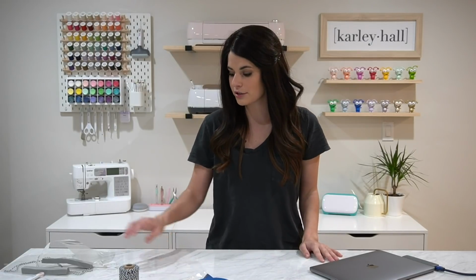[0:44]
Hey everyone, it's Carly Hall, and today's video is a super practical video on how you can help while still staying at home with everything going on in the world right now.
Last night I put out a call on my Instagram to see if people still needed additional personal protective equipment, PPE, and I received an overwhelming amount of response that yes, people still need handmade PPE. Of course, I'm not a doctor, and so I can't validate the effectiveness of what I'm about to show you, but this is my way of trying to help with everything that's going on.
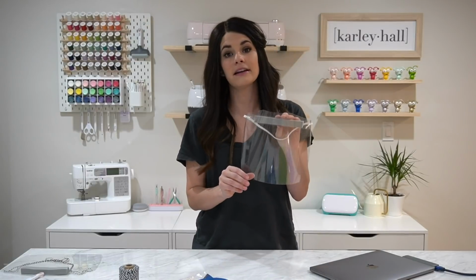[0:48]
And as always, PPE that's handmade is a last resort, but it's better than nothing. And in some cases, some people have nothing. So I wanted to show you what I came up with. I modified a whole bunch of patterns that I found online to create these protective face shields.
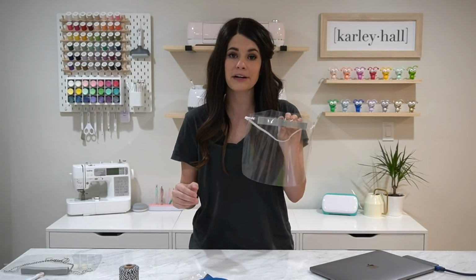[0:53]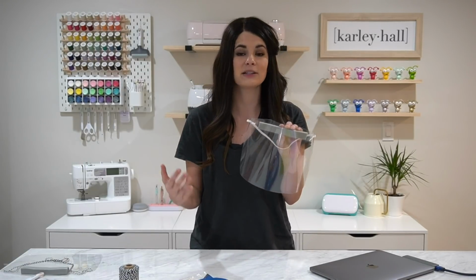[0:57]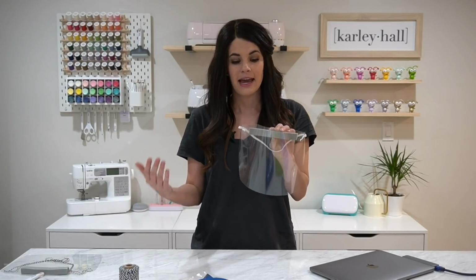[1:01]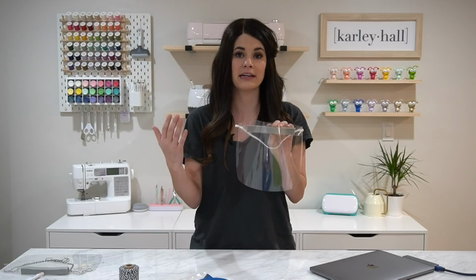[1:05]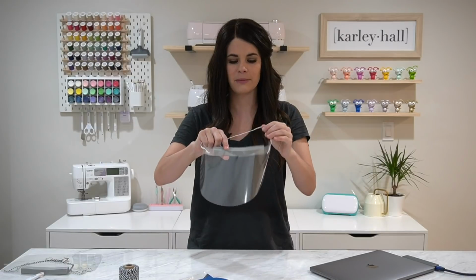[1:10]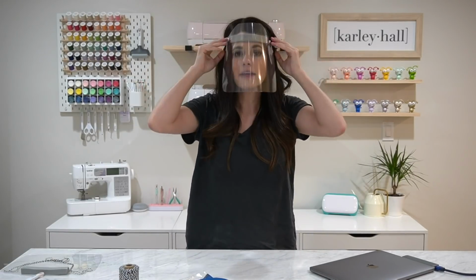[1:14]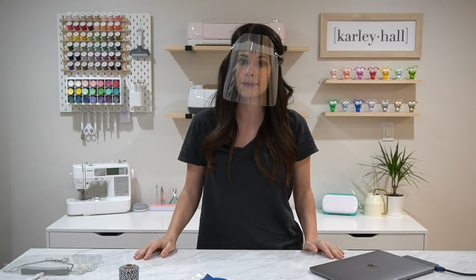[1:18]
Now these are a moisture barrier that will prevent moisture from penetrating a N95 mask or a homemade face mask, and that will increase the longevity of the mask and of course protect the people behind the mask from getting any moisture in their face. So we are going to use transparency film, and the mask fits just like this. This one uses elastic, but I will also show you one that uses a string or a ribbon.
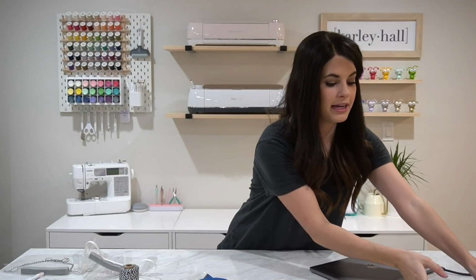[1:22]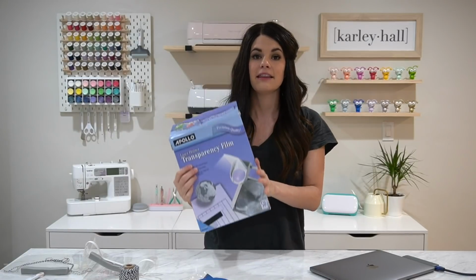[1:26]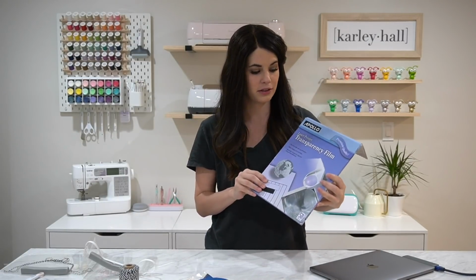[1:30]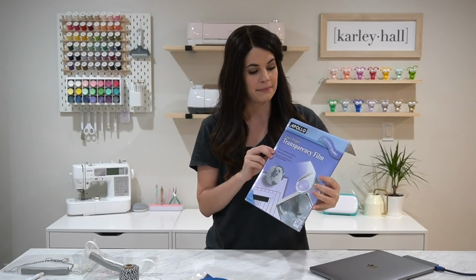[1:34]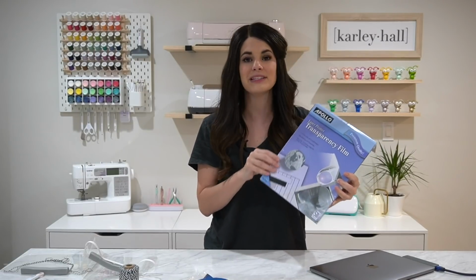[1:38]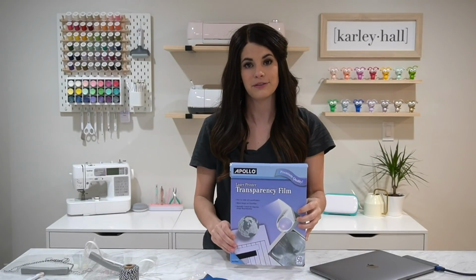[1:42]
All right, here is all you need to get started. So I am using transparency film, and this is the film that teachers use on overhead projectors, or used. I'm not sure if they still use it, but I will link to where you can find this online. It's from big office stores. Amazon has it. So again, please do not leave your homes to get your supplies. Have them shipped to you if you can, or ship them to people that are making these.
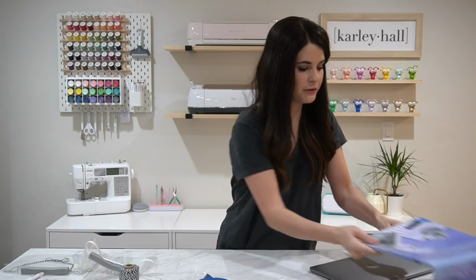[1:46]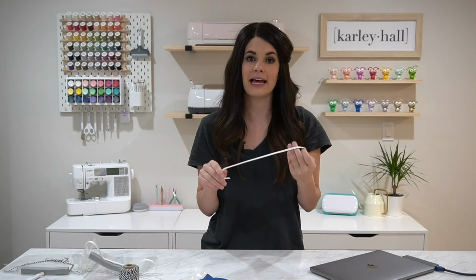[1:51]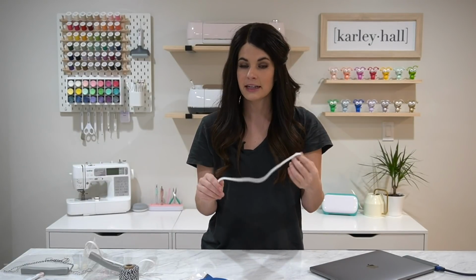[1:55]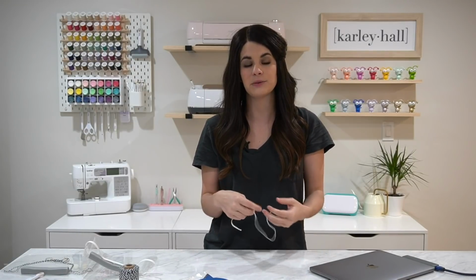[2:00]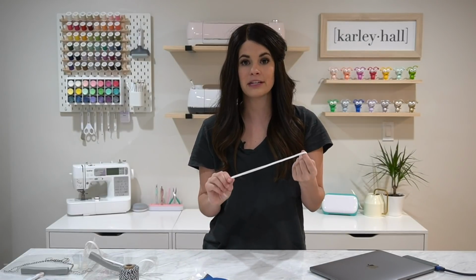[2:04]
So we will need transparency film. If you have elastic, I know a lot of us went through all of our elastic when we were making our face masks. So you either need elastic. I've seen gift wrap elastic being used, so I will link to all the places that still have elastic in stock. I'm using a 1/4 inch, 14 inch long piece of elastic, but you can also use string. So I know a lot of people are still out and working and they need any type of protection that they can get. So I wanted to include an option that you can use a piece of string or ribbon.
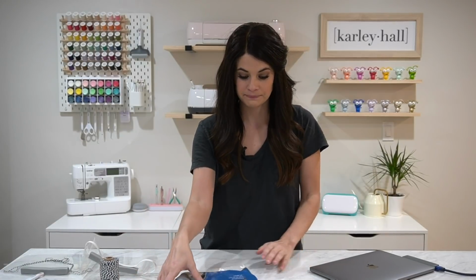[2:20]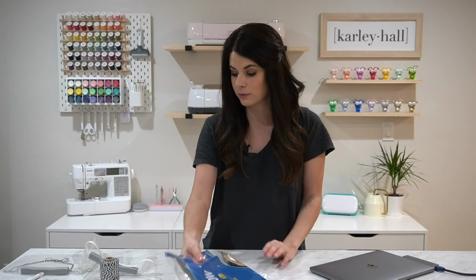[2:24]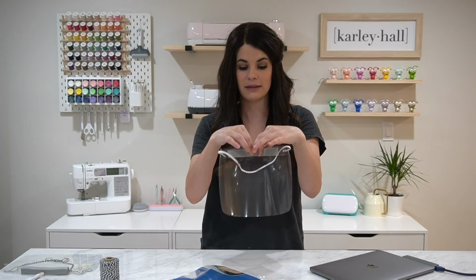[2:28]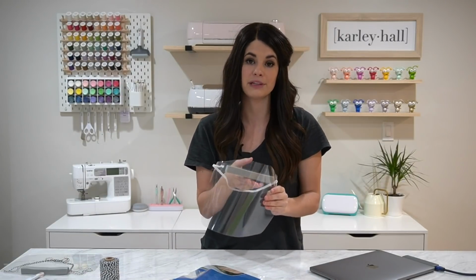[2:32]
And then optional is foam window seal. So this foam is what goes along the top of the face shield, just to make it a little bit more comfortable, but you actually do not need the foam to complete this project. We can do it without it.
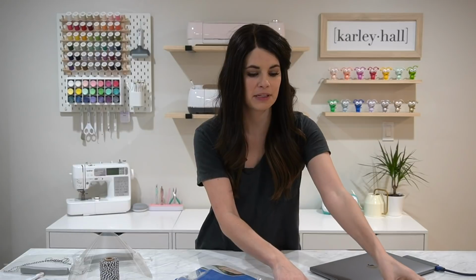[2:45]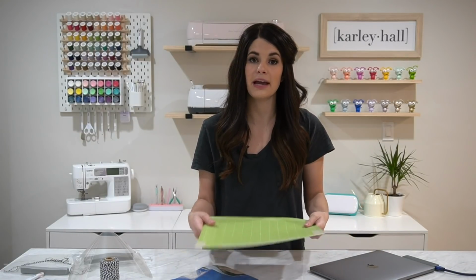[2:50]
If you have a cutting machine, that's great. We can cut the template out. If not, you can print the template out and just cut around it like you would a sewing pattern. So we will be using our Cricut cutting machine. You can use your Maker or your Air 2, and then you'll just need a standard grip mat.
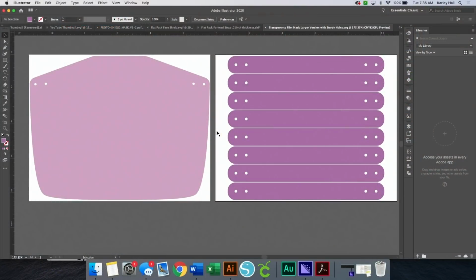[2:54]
Here is the file that I created for these face masks. So this is the shield in the front, and then these pieces are the head strap that makes it curve. So you can fit 2, 4, 6, 8 on one sheet of transparency, and then one mask on each 8.5 by 11 transparency sheet. We are going to bring this design into Cricut Design Space.
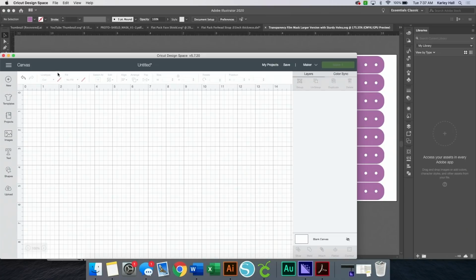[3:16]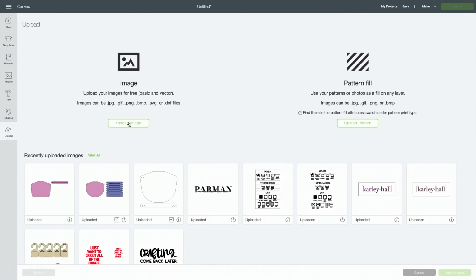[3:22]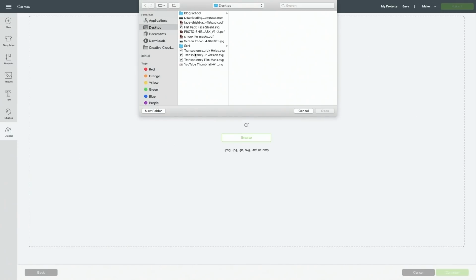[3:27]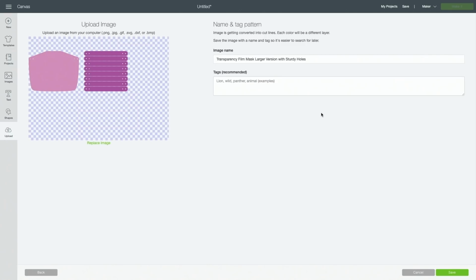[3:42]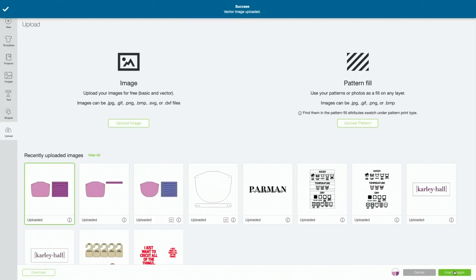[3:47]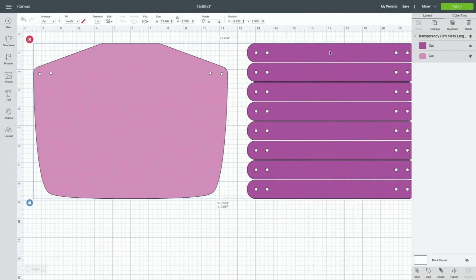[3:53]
So start by opening Design Space and then navigating to the upload option here. We're going to choose upload, browse all images, and then download the version from my blog, or if I sent it to you in email, I will make sure to put the link in the video description below so that you have it easily accessible. So I'm going to open up this version here, and then we're going to save it and continue on. We'll insert that onto our canvas, and it should come in just like this at the correct size already. So we'll click Make It.
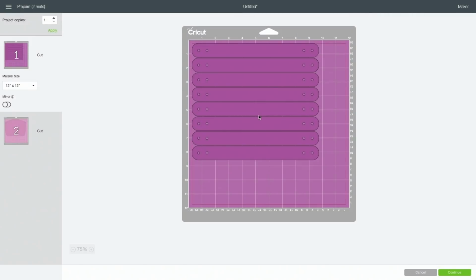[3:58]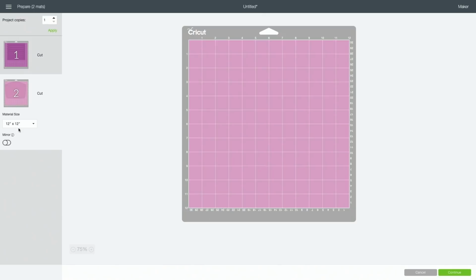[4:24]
And then this part is kind of helpful. I decided that I wanted to move these to the center of my mat to make lining up the 8.5 by 11 material a little bit easier. Since I cut it so big, 8.5 by 11 is actually not an option for my material size because it's a little bit too big for 8.5 by 11. So we're gonna hack it just a little bit, and we're gonna drop that into the center of our cutting mat by dragging it to the center.
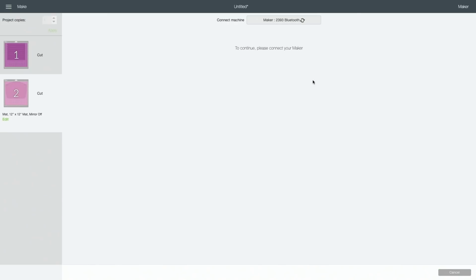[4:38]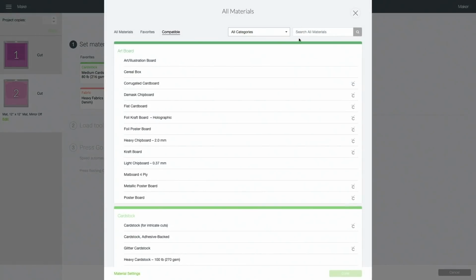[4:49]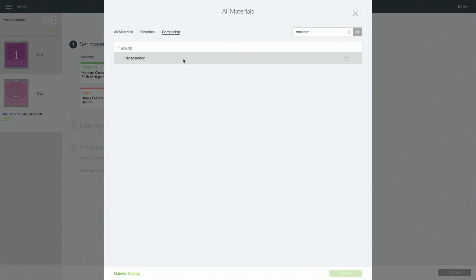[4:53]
We'll do the same thing with the larger shield. And you can see that I'm about 1/4 inch, a little bit over from that red line. So you just want to pay attention to where the red line is. Click continue and then connect to your machine. If you are using an Explorer Air 2 machine, you can turn your dial to custom and then choose browse all materials like you can on the Maker, and then just search transparency. And then choose this result here and click done.
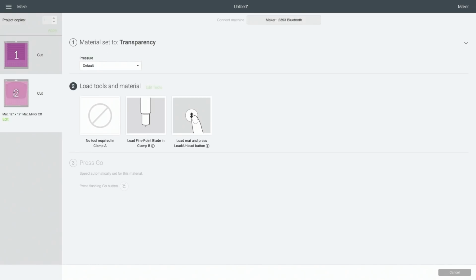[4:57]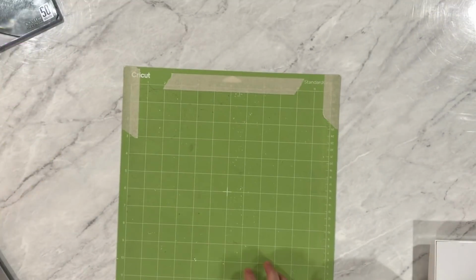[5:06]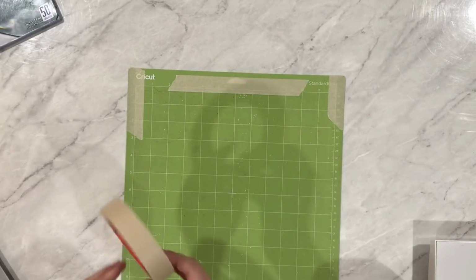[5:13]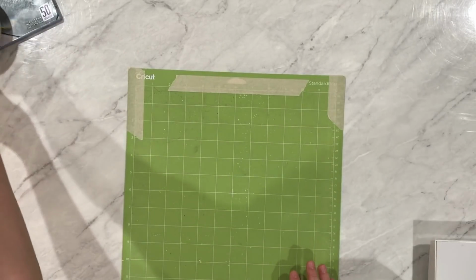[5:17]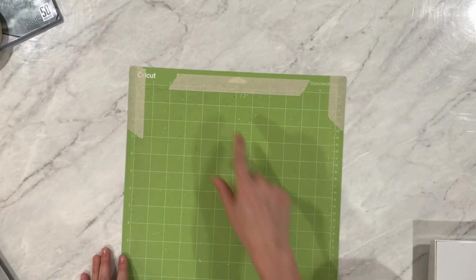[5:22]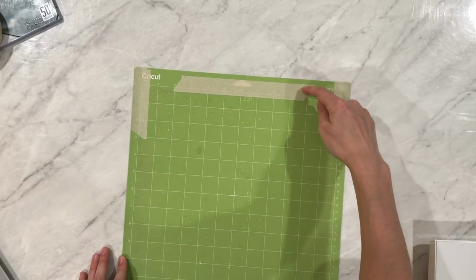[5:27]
We're going to start with the larger face shield piece, and I will show you how to load the transparency on your mat so that you cut it perfectly every single time. To load your transparency film in the center of your mat, I used a piece of masking tape along the edges. You can see it's just a standard roll of masking tape. And I taped it along the edges just so that I could see where the center was a little bit easier. And then I also measured down about 1/4 of an inch down my mat, maybe a little bit closer to the top, and I taped that off.
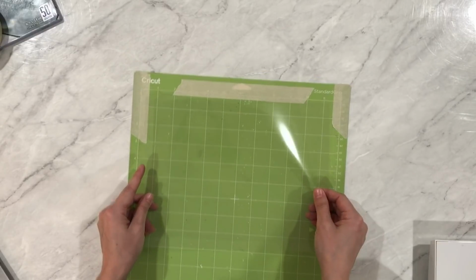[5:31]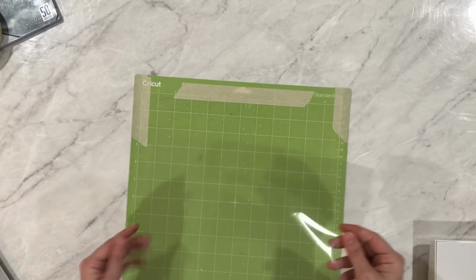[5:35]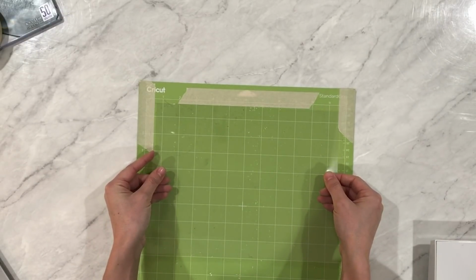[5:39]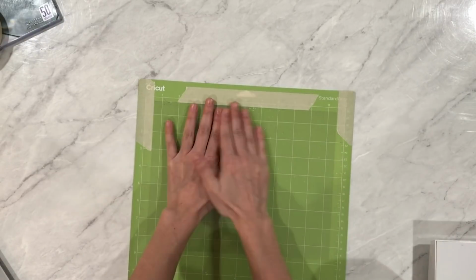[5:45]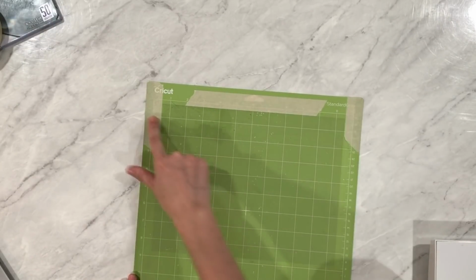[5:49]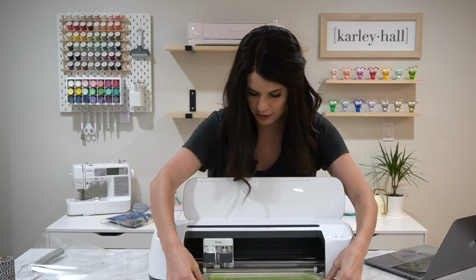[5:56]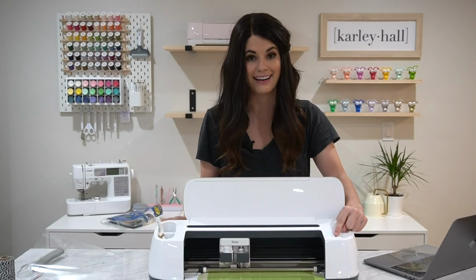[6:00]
Now you can cut the first one and then see where it ends up being. That could be helpful as well. So after you have it taped out, you're just going to want to line it up against that masking tape at the top and then do your best to center the 8.5 by 11 sheet landscape along your mat. So I have it up against almost each edge of the masking tape and then against the top edge of the tape there. We'll load this into our cutting machine and then cut it.
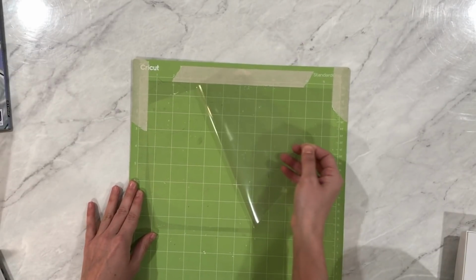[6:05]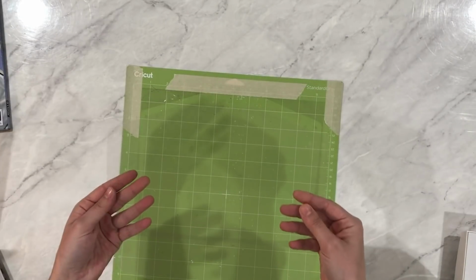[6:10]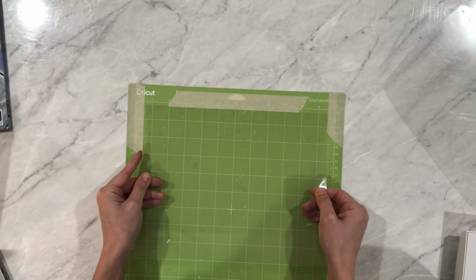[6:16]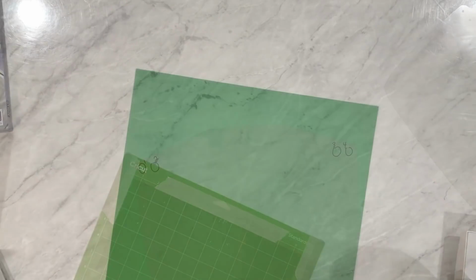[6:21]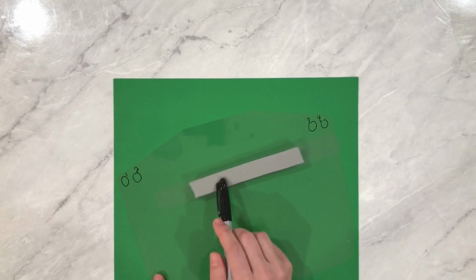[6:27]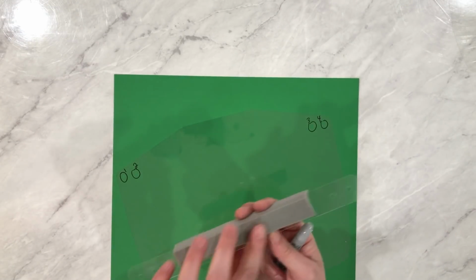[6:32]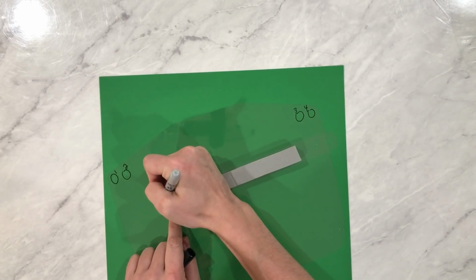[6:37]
You can see here that by centering it just like that, all of your pieces will not be cut off and you'll have your clear face shield ready to go. Next, we'll cut the strap around your head and we will line up the transparency film the same way and cut that. I added some numbers around the holes so you could see what I'm doing, and then I went ahead and I cut down a piece of foam and applied it. If you don't have the adhesive foam, you can tape this on with double-sided tape, and then the 4 holes are right here, so I will circle those so you can see them as well.
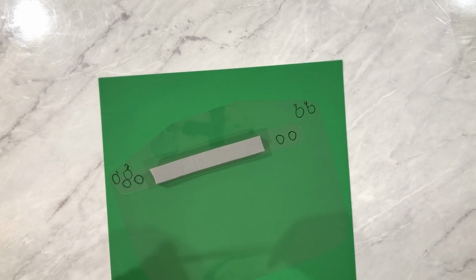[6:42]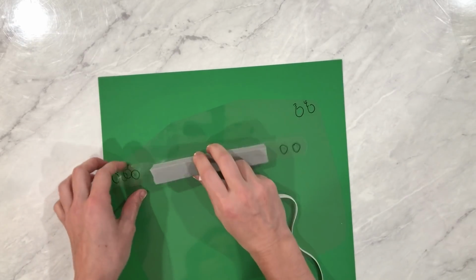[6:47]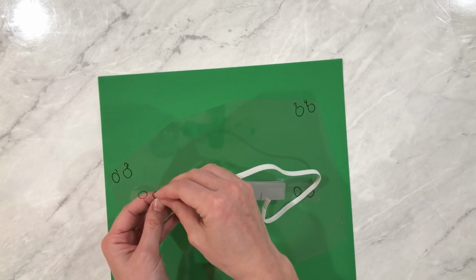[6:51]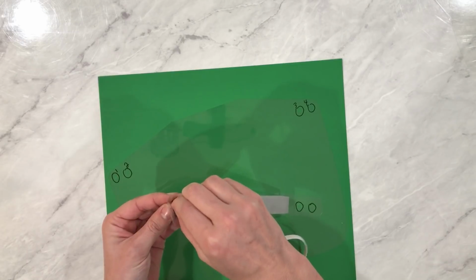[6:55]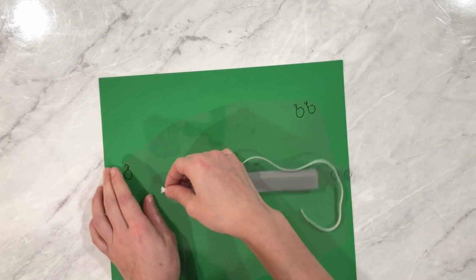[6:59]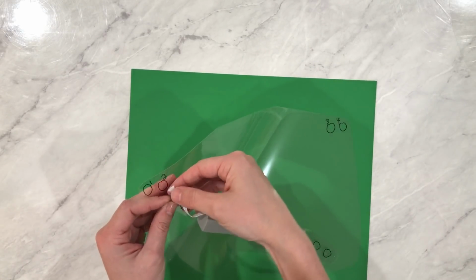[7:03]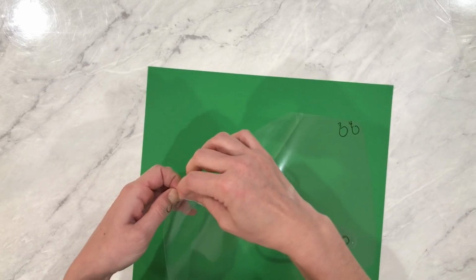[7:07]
I'm going to start with our elastic version. Again, if you don't have elastic, we will also do a string version. So starting on the second hole with the piece that has your foam or your headpiece, you're going to slide that through. And then on the second hole, number 2, again, this is the back side of your mask. You're also going to slide that through to the front.
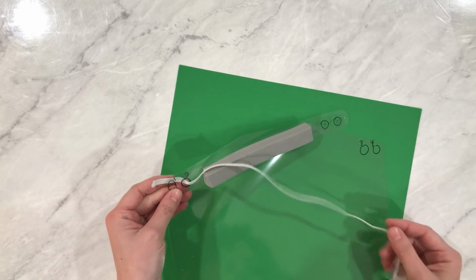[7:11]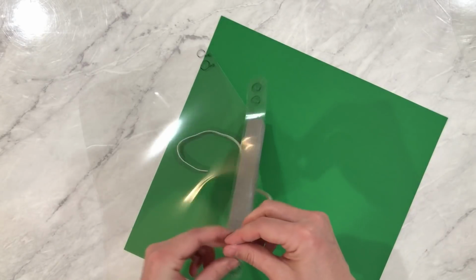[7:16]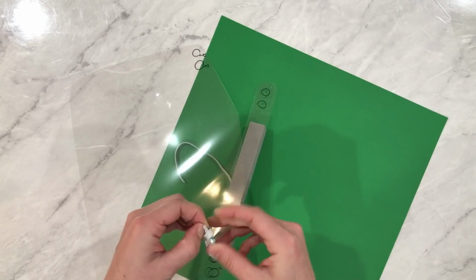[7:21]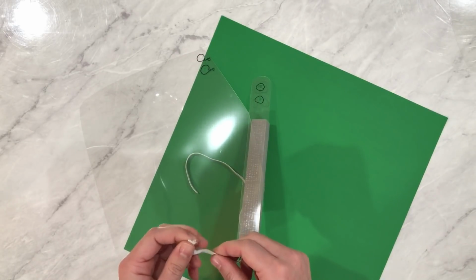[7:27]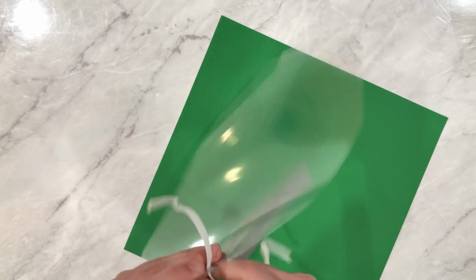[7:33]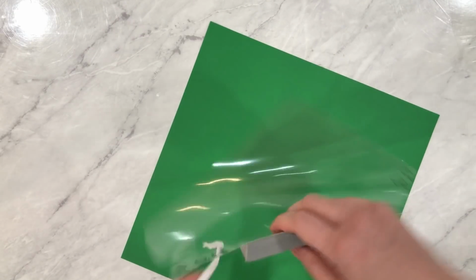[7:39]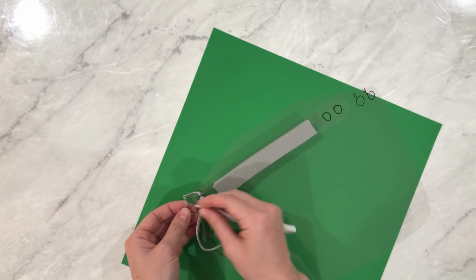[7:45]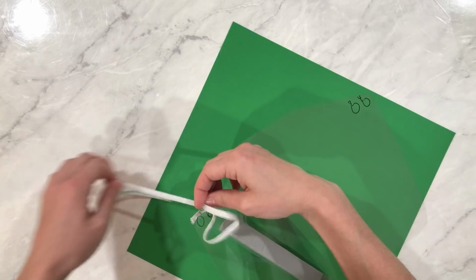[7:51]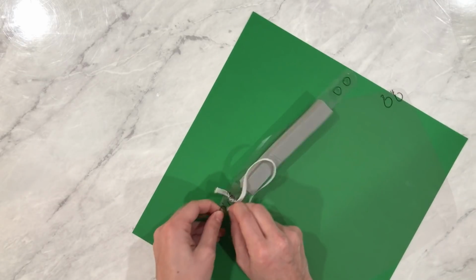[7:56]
You'll want to give yourself a little bit of room because you will be tying this piece. A single knot works just fine, but if you want to do a square knot, you can also double knot it, but I'll show you that. With this size elastic, you should be okay with 1 single knot. So I have my elastic through the front, through hole number 2. Then I'm going to lace it through the first hole on my headpiece, and then through the first hole on my shield.
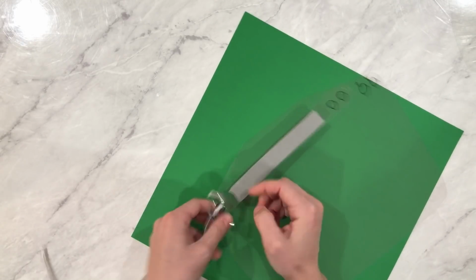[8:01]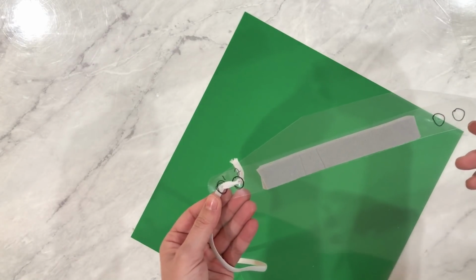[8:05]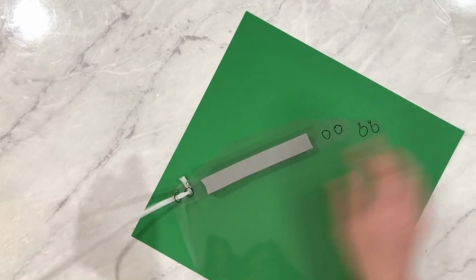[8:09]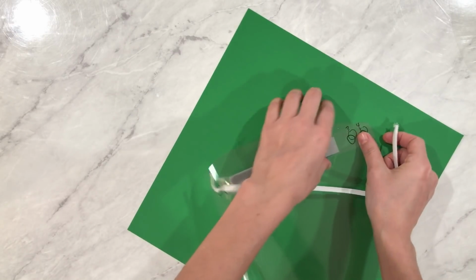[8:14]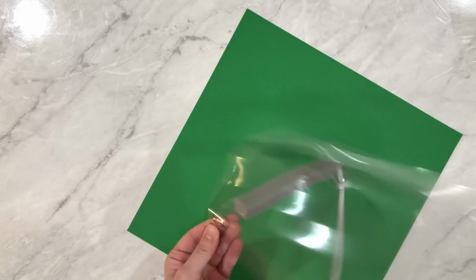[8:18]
And here's the front, and this is the back. Now this piece is going to wrap around the head, and we're going to come back over and go through the front of hole number 4.
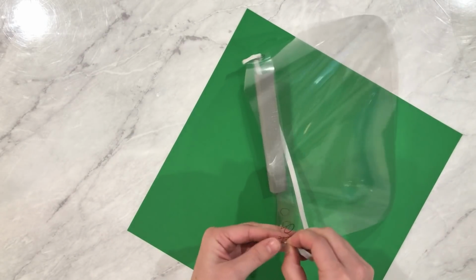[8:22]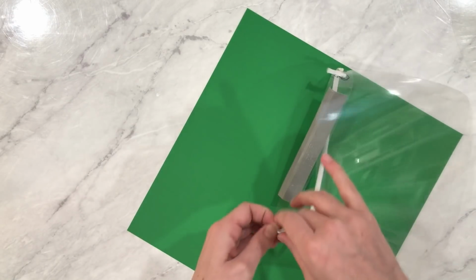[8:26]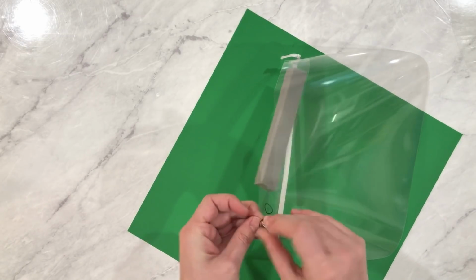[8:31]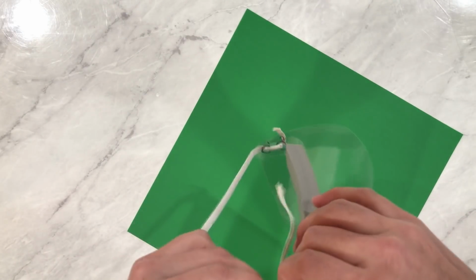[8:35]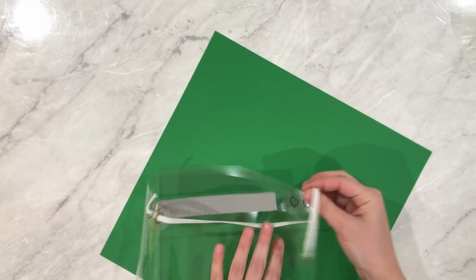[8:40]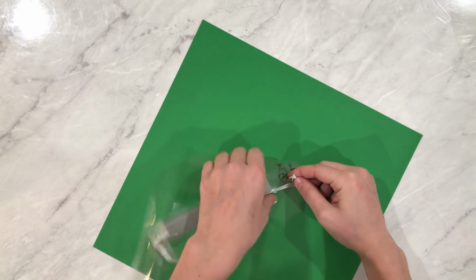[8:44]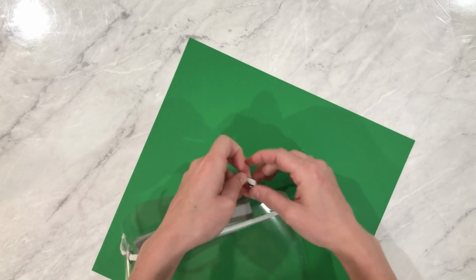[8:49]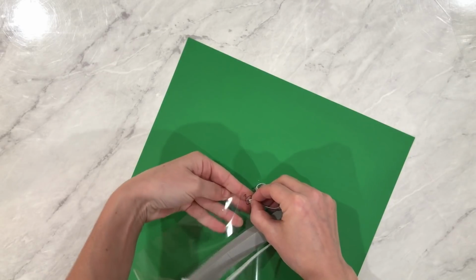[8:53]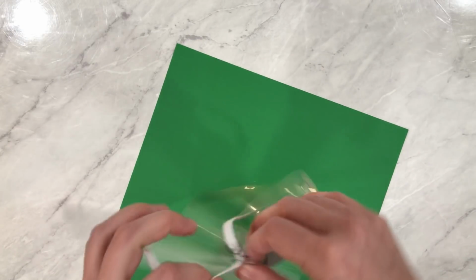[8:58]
And then the front of the outermost hole on the headpiece. So it should look like this now. Then we're going to go through the 3rd hole, through the back of the head strap, and then through the 3rd hole of the face shield. And then pull that tight and make your knot.
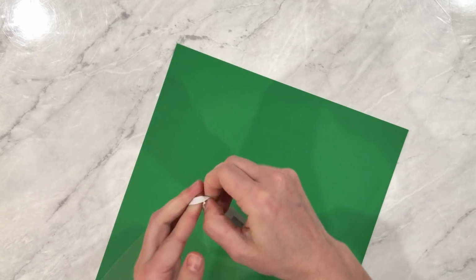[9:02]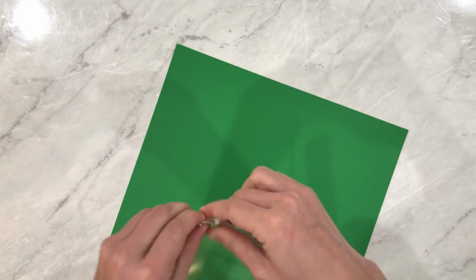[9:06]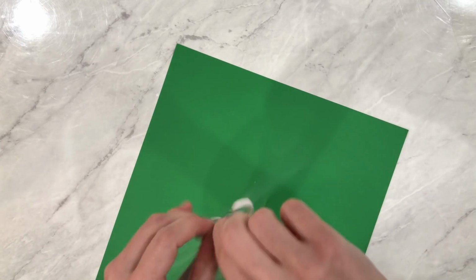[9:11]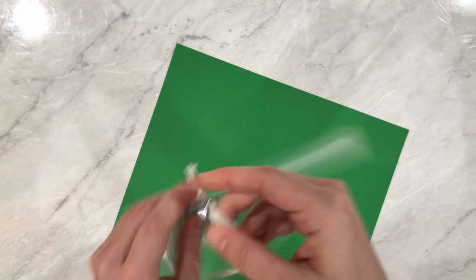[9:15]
Now, if you are assembling these for people, make sure to assemble them using washed hands or wearing gloves and a mask so that you are not spreading any type of germs onto your mask. And then you'll pull that tight just like that.
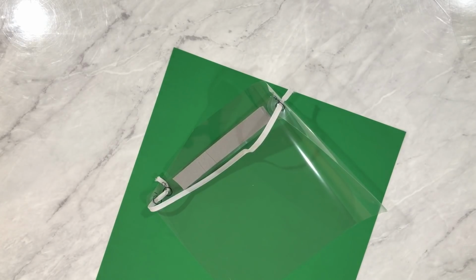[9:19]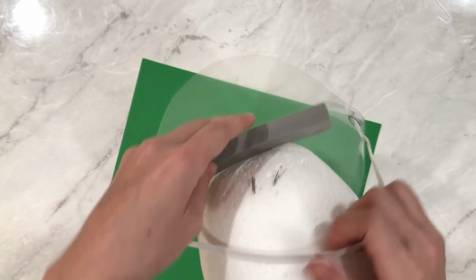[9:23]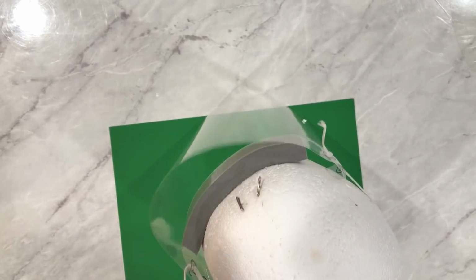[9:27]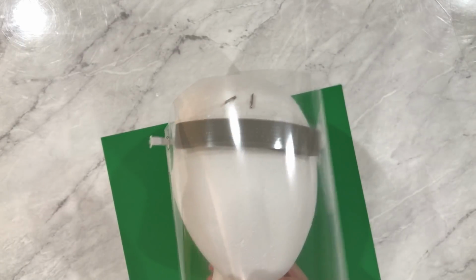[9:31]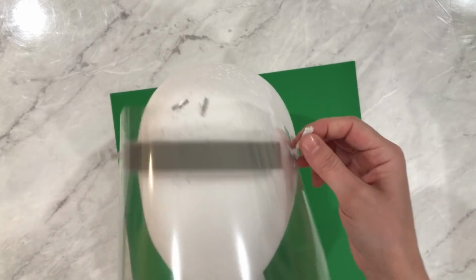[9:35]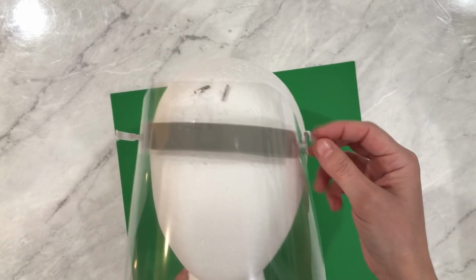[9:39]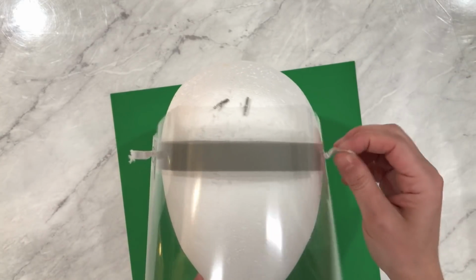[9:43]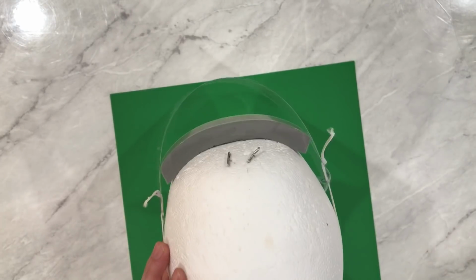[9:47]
I have my mannequin head. So the way that this goes on is around the front of the head, just like that. And then you have your face shield over your face. If the person wearing it needs to tighten these or loosen them, you can also provide the elastic so that you can tighten or loosen them and trim away the extra if you want to. So again, that's how it fits.
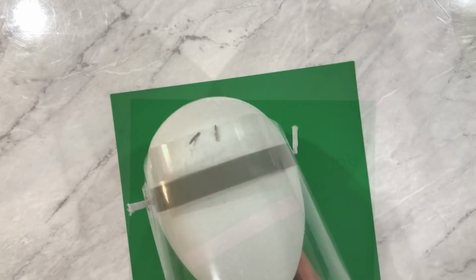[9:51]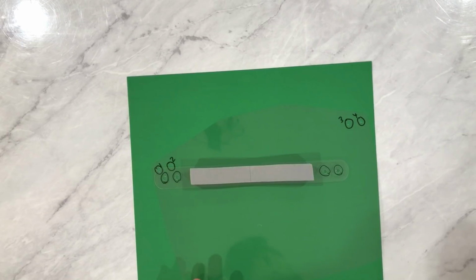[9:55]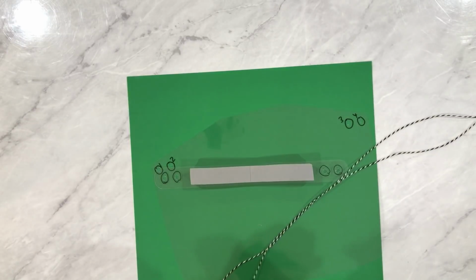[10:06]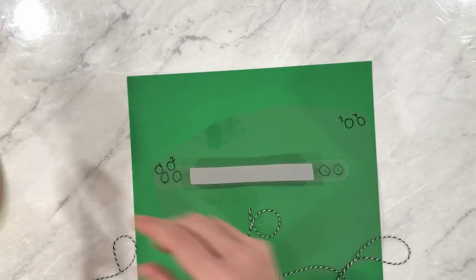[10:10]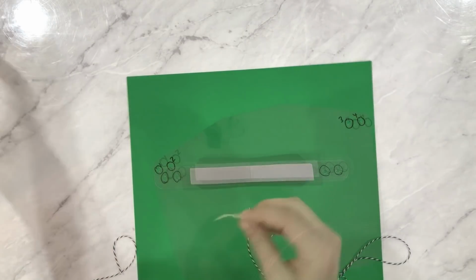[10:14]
Now let's move on to the version with the string. Okay, for the string version, we are going to do almost the exact same thing, although you will need about double the length of your string. So I did about 2 arms length of string just to give myself a little bit of extra. And then if you want to tape the ends of your string to make it a little bit easier to thread through, you can do that.
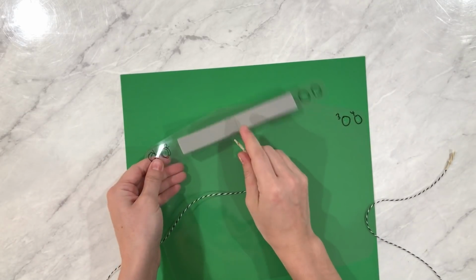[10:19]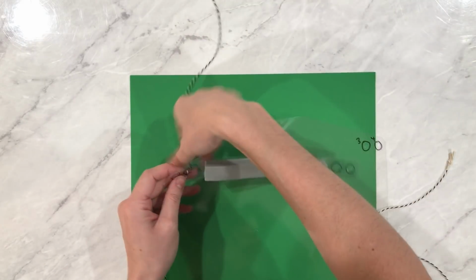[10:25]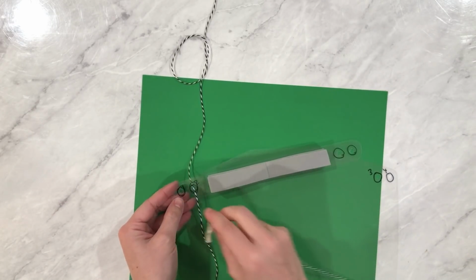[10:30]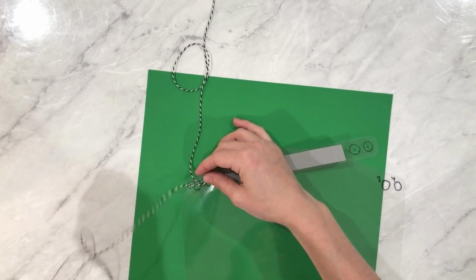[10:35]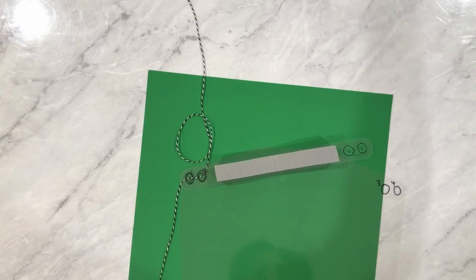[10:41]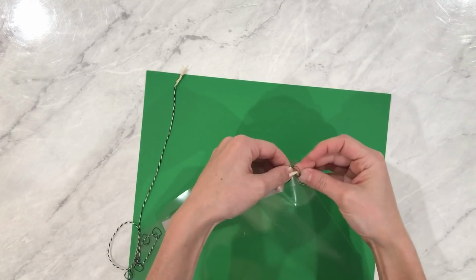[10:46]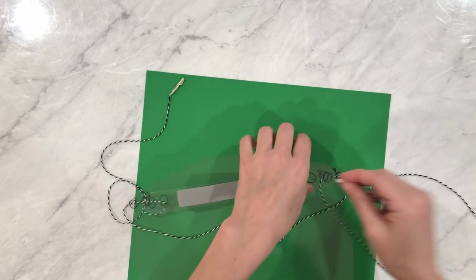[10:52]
All right, to make this easy for instructions, we are going to thread it almost the exact same way. So similar to how you had your elastic go through hole number 2 first, you're going to have that come out hole number 2 towards the front. Then you're going to lace it back through hole number 1 so that it creates that same loop. This piece is the piece that will go around the head. So again, we'll go through hole number 4 through the front, so it loops around the mask. Again, this will go around the head. And then we'll go back through hole number 3.
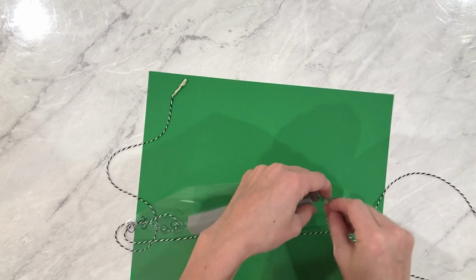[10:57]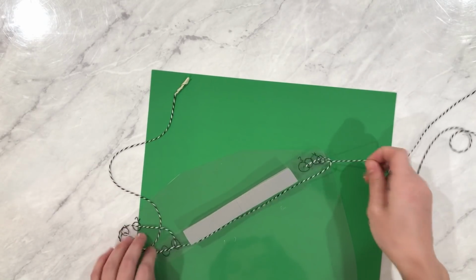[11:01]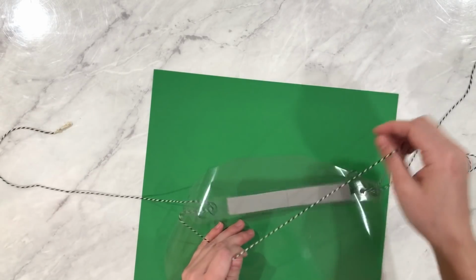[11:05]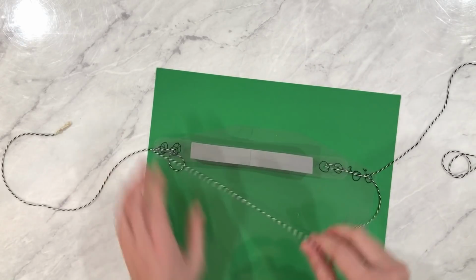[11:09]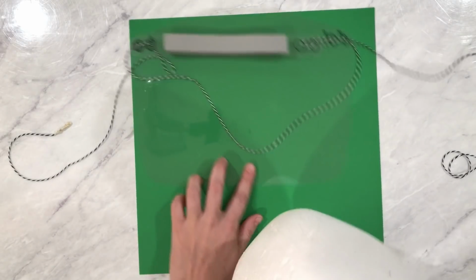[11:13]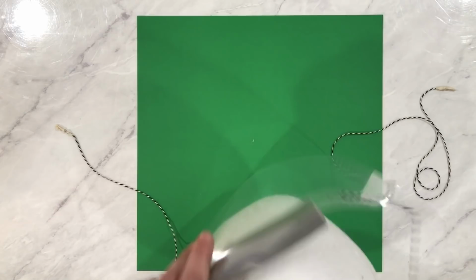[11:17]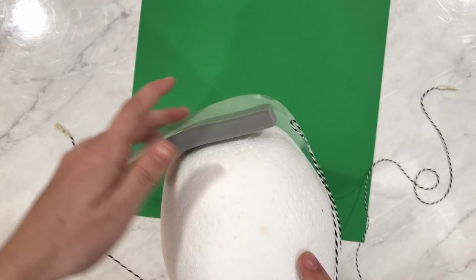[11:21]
Now you can lace this however you want, but for tutorial purposes, I thought it would be the easiest to mimic the same way that we went around the other. And then you can even it out so that you have enough on both sides. Now to wear this, we'll use my mannequin head again. This will go around the head. It might be hard to put it on with one person, but we'll see.
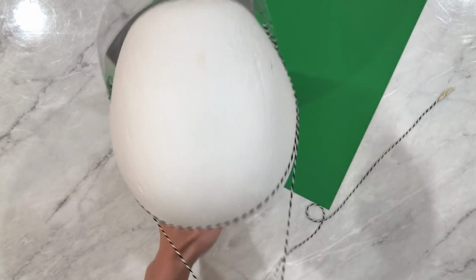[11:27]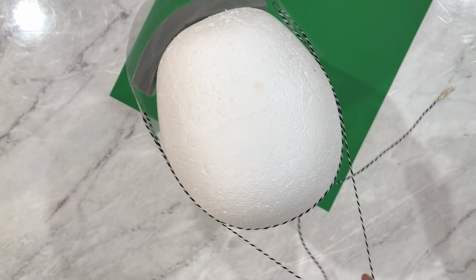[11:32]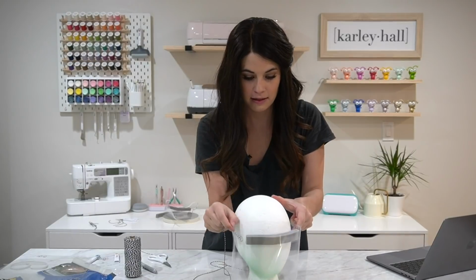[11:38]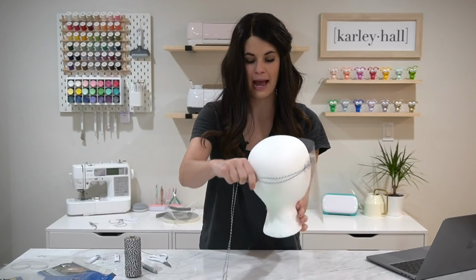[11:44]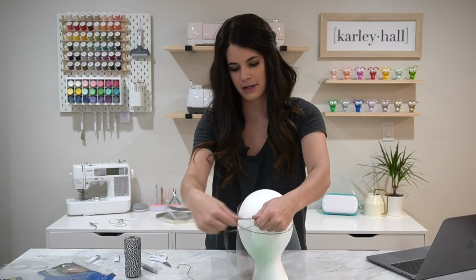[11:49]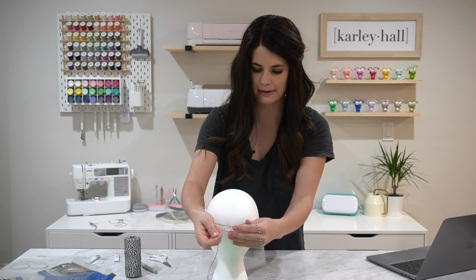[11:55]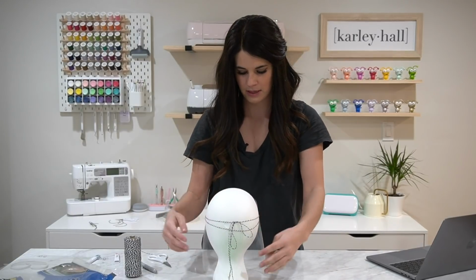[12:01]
Okay, so to wear this, you will put it around the head like this and then tie it in the back. Let me change cameras so you can see. Okay, so to wear this, you have the strings or the face shield in the front like this, and then the strings will come around the back of the head like that, and then you will tie it here into a knot. So you can see I left probably a little bit too much string, but then you can secure it in the back just like this with a bow so that your face shield goes around the head like that.
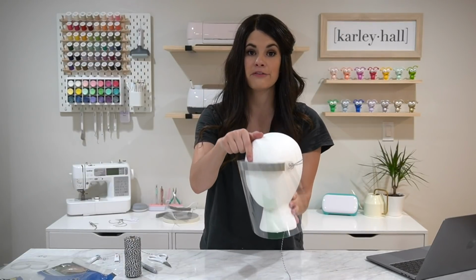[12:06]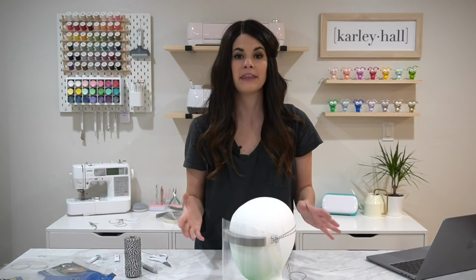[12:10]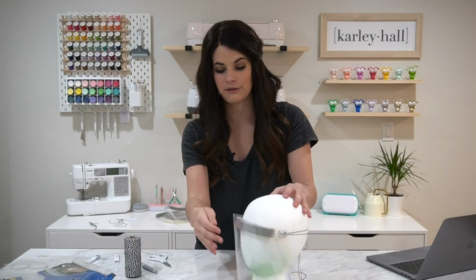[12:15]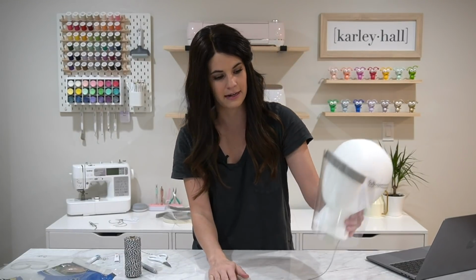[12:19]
Again, you don't need the foam. I originally took it off because I thought it was difficult to sanitize, but then a whole bunch of medical professionals said, can you please add the foam or make sure that the foam works, because it does add a lot of extra comfort. So I went ahead and added it back on.
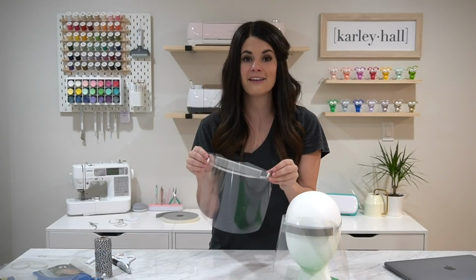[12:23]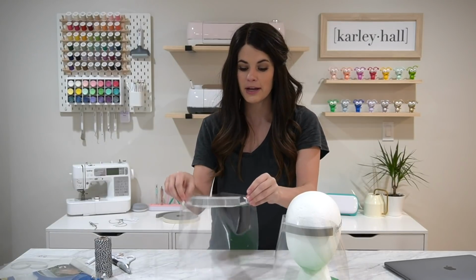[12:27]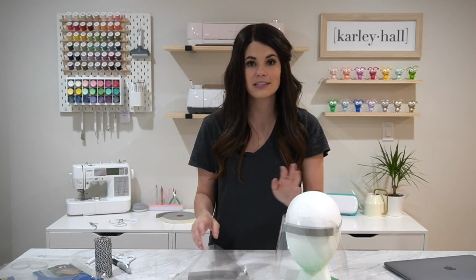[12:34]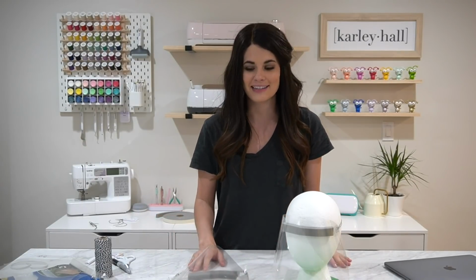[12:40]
Hopefully this was easy enough to follow. If you have questions, make sure to leave them in the comments below and I will happily answer those. If you work in the medical industry and you want to see modifications to these files, please let me know. I'm happy to modify it. Again, I'm not a medical professional. I am just a crafter trying to help. So if you have better suggestions or ideas, feel free to leave them in the comments.
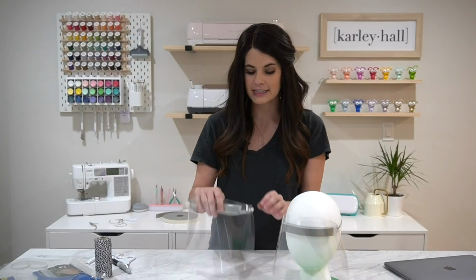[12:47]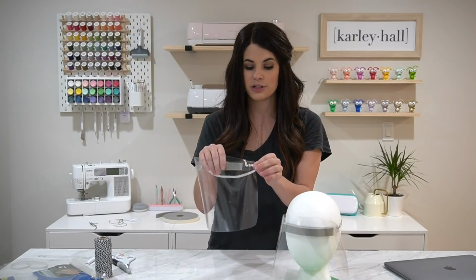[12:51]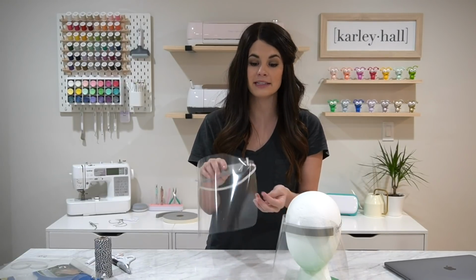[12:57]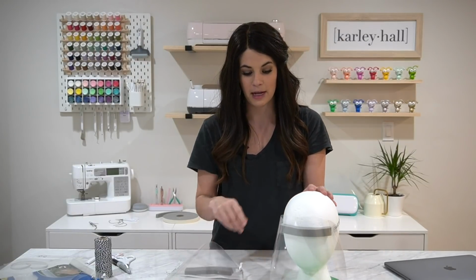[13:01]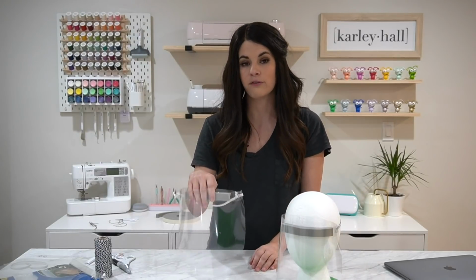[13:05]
I also played around with the idea of adding some type of grommet to the holes to make them a little bit sturdier. These haven't ripped without support, but if you want to make them sturdier and you have a grommet setter or a Crop-A-Dile, absolutely, you can add those, and that will probably help a lot with the string version, since the strings don't hold the form as well as the elastic does.